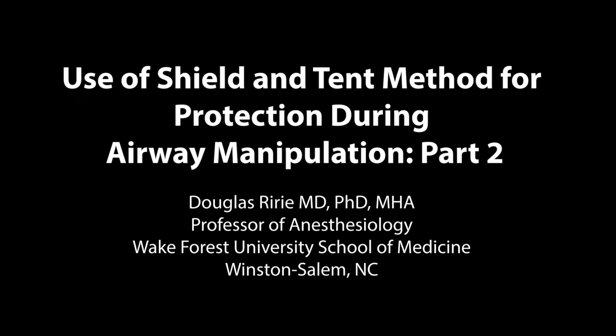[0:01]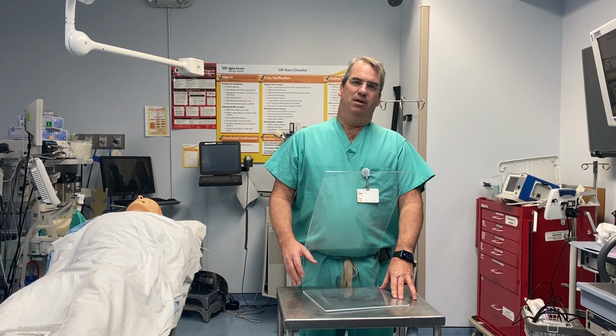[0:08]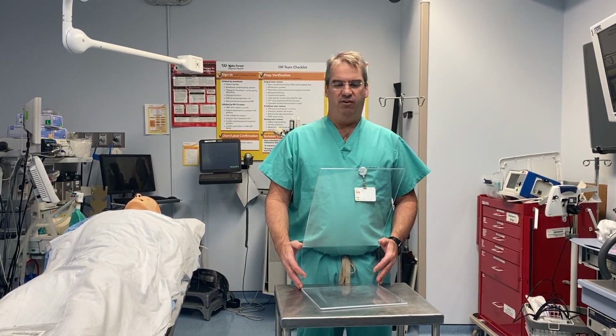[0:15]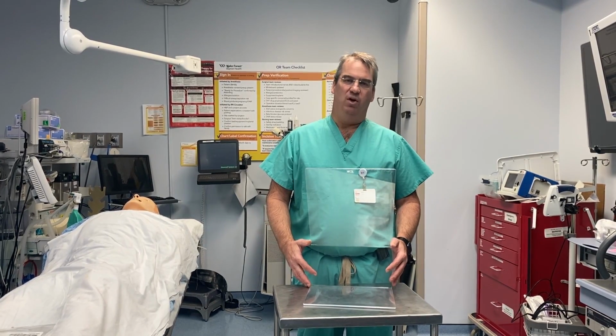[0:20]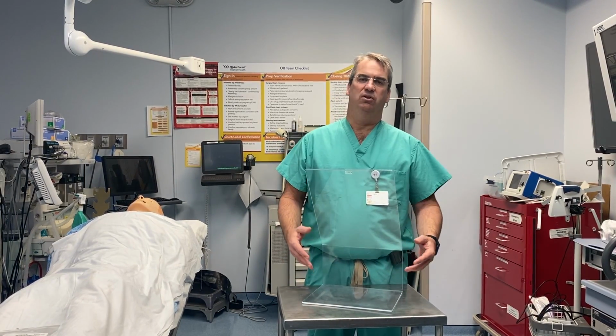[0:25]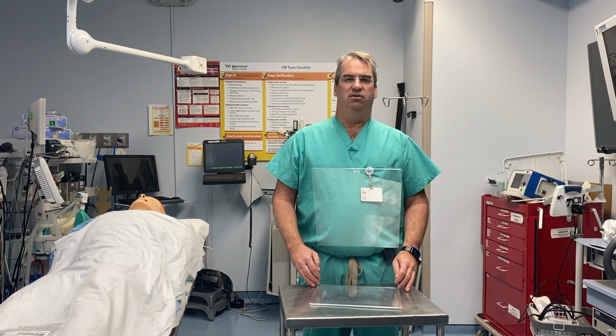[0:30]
My name is Douglas Ririe from Winston-Salem, North Carolina, and I'm here to go over some information about the intubation shield that we introduced previously. There's been a significant response for people asking questions about what the dimensions are and where to get it, and I'm here to provide that information now. Once again, the intubation shield uses a tent to try and protect providers in the face of manipulation of the airway, either during intubation or extubation.
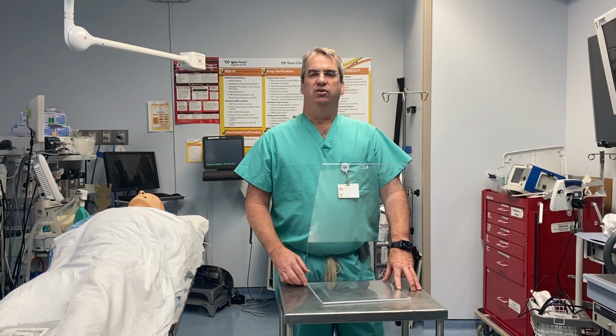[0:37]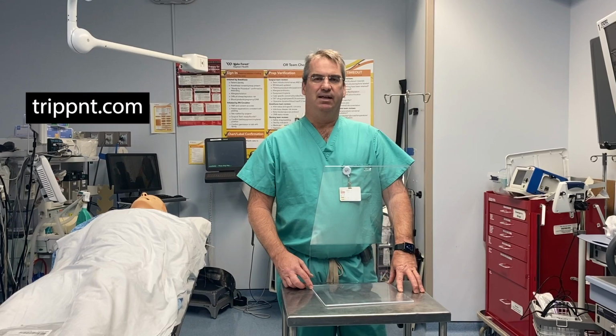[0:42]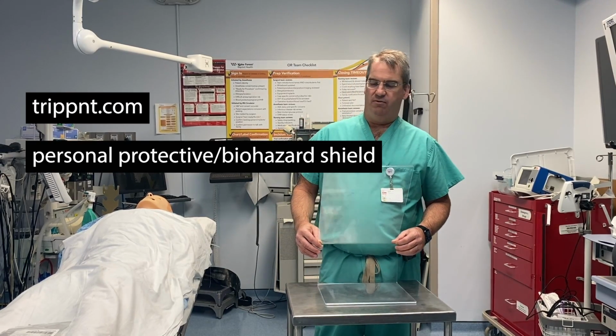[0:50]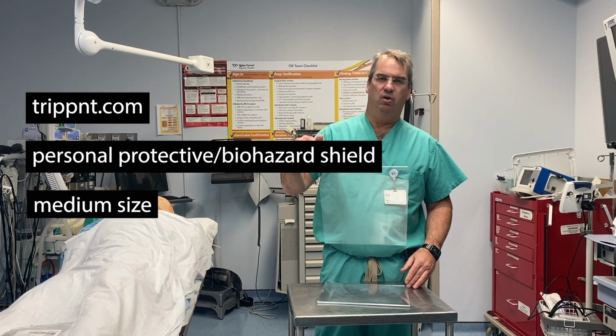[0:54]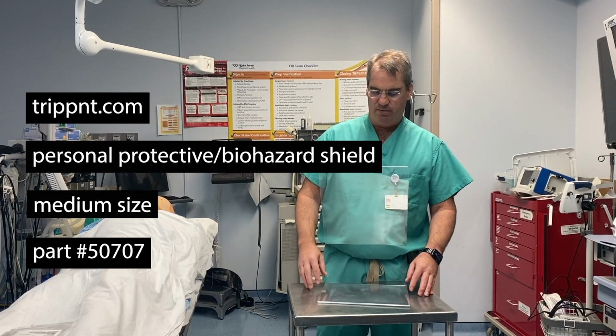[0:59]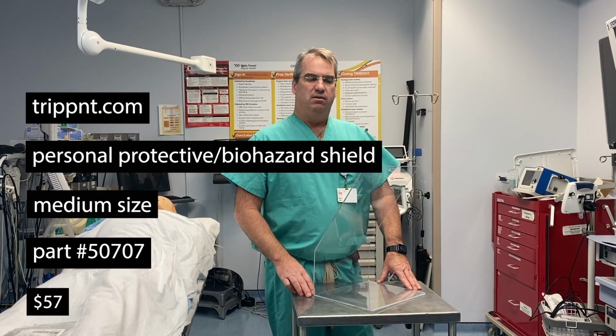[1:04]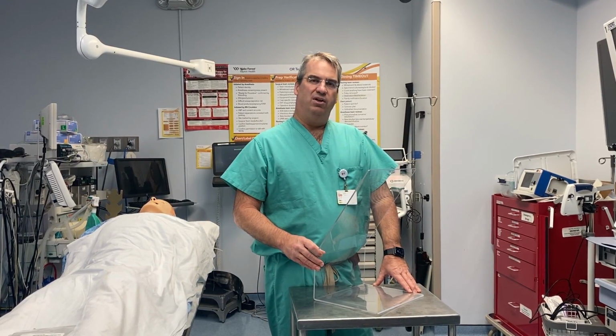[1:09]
The easiest way to get the shield is through TripNT, TRIPPNT.com. You can go to their website or you can call them. This is a personal protective shield or a biohazard shield. It's a medium-sized shield. They make one a little larger and they make one a little smaller. This is part number 50707. It costs $57 as of last time I checked. It can easily be ordered. And if you are interested in making it on your own, I can give you the dimensions.
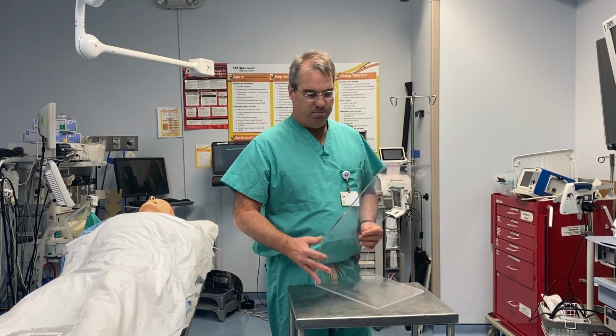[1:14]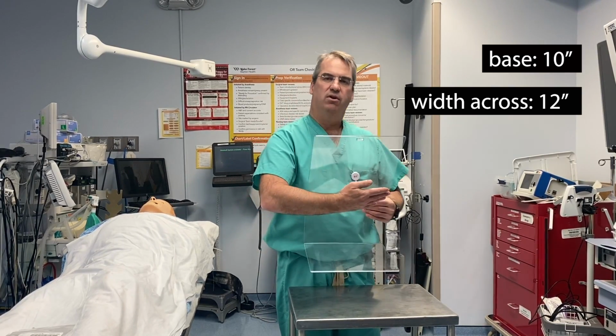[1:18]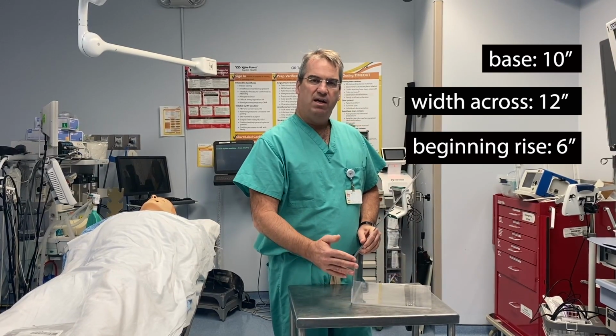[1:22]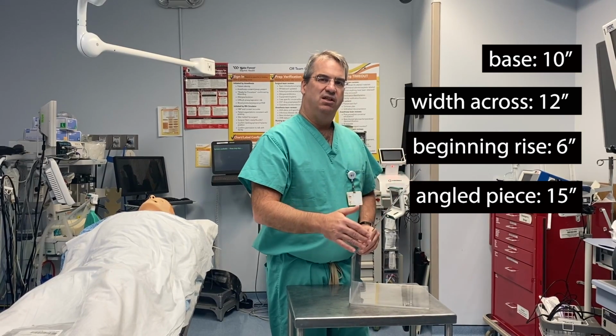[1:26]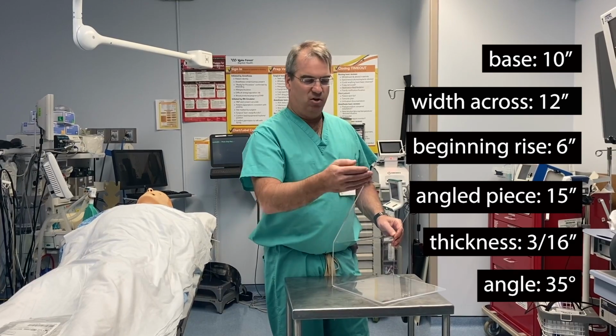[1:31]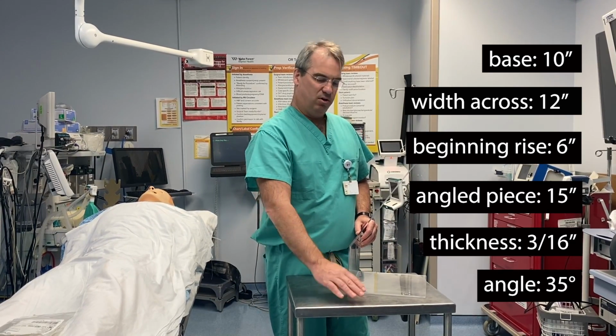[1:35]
The base is 10 inches. The width across is 12 inches. The beginning rise is 6 inches, and then the angled piece is 15 inches. These dimensions change at the different sizes, and then the angle is at a 35 degree angle to the perpendicular of the surface that you're working on.
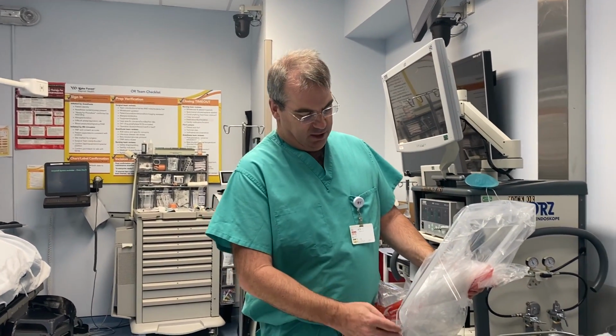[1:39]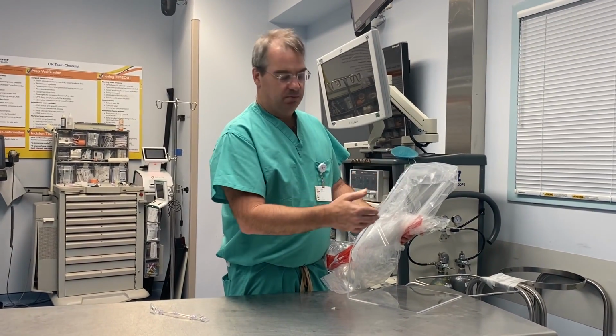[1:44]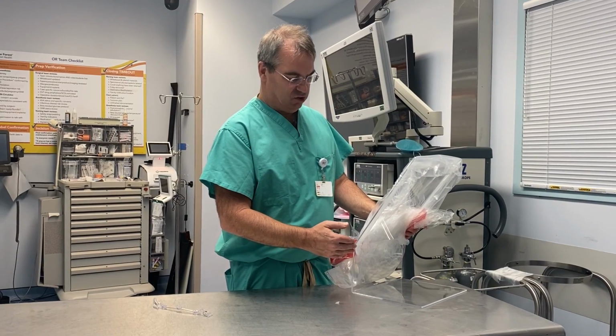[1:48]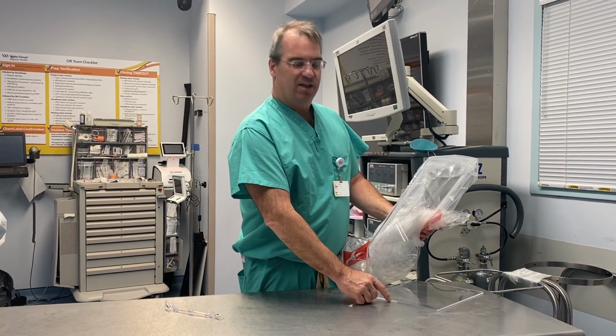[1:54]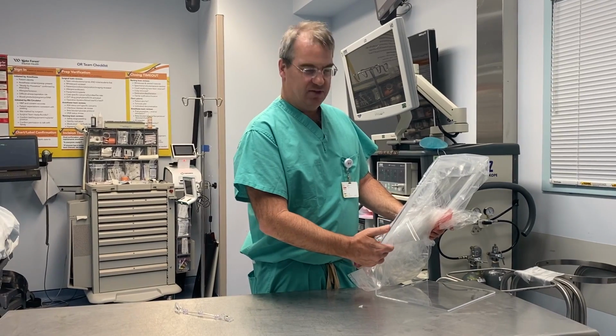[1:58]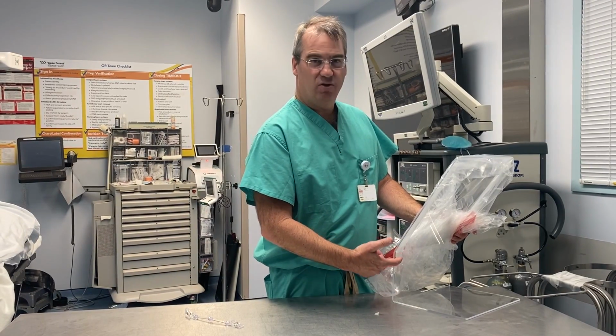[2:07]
One thing to remember, this is a continuous piece that's molded to this form. If you try and manufacture this elsewhere, you can use a little bit less angle, you can make this a little bit higher. But one might consider putting a reinforcement piece of plastic here, because if this is a seam with glue or epoxy, it's going to be more likely to crack, whereas this is one continuous piece.
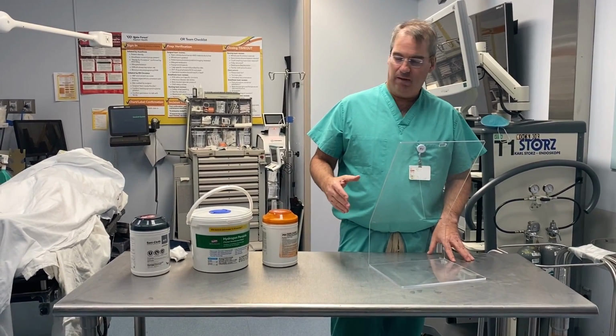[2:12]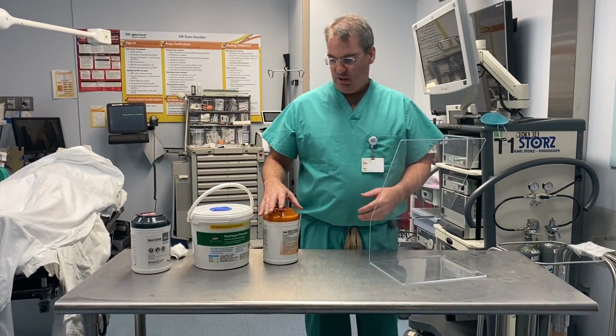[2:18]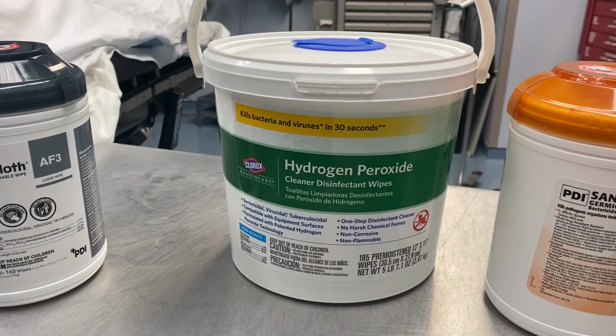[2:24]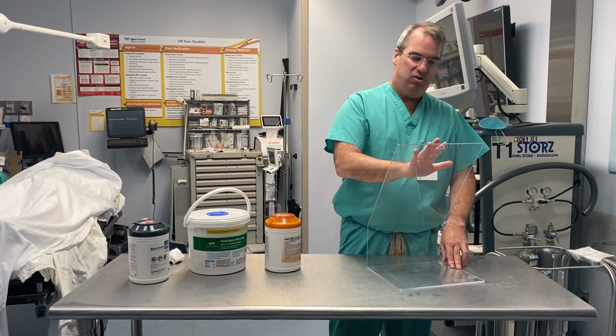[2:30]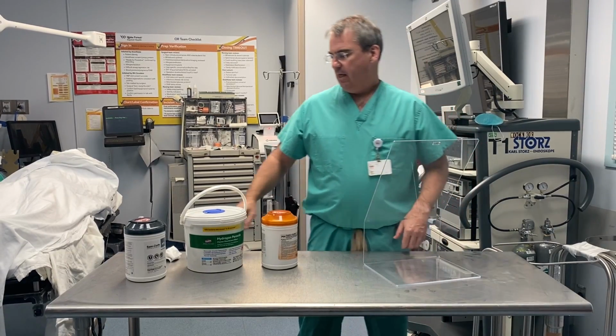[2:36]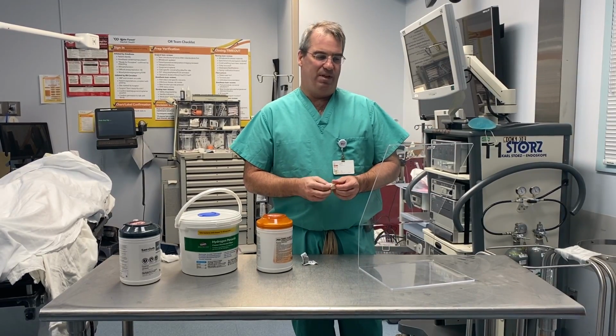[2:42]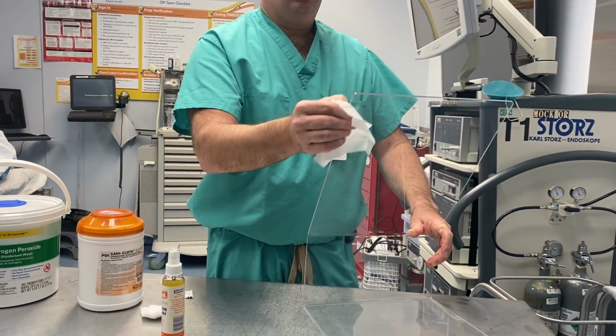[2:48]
I want to point out that any high level decontaminant wipe can be used to clean or decontaminate the shield after use. This includes the CaviWipes or the Sani-Cloths. It also includes bleach, which will not hurt the acrylic. If you wipe them down often, you'll get a slight film that will change the visual acuity through the glass slightly. And all one has to do to rejuvenate the clarity of the acrylic is to wipe it down with an alcohol wipe after the high level disinfection, and then the acrylic becomes perfectly clear again.
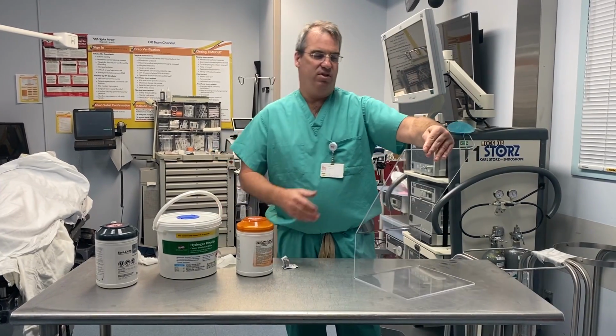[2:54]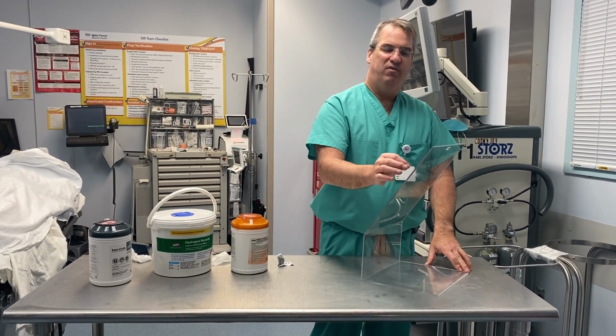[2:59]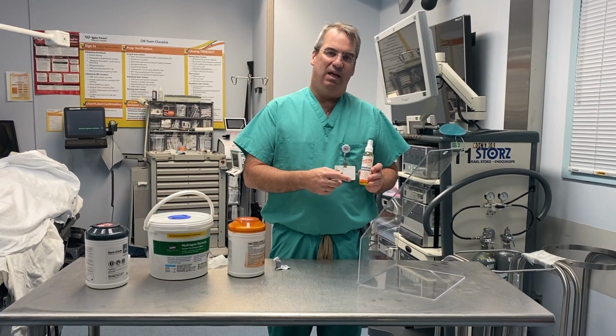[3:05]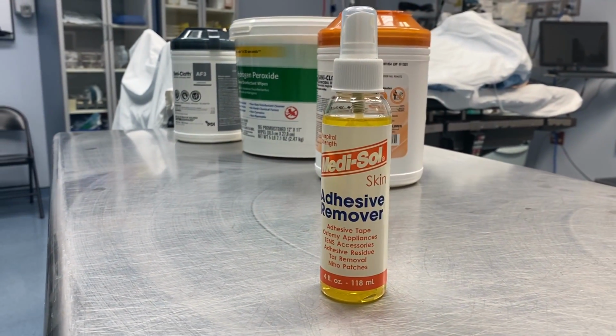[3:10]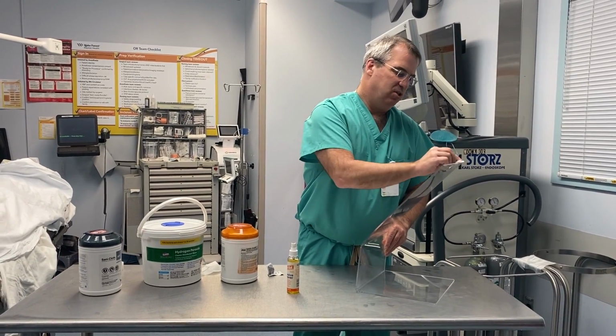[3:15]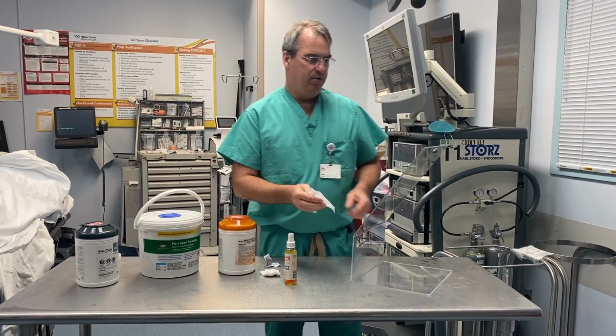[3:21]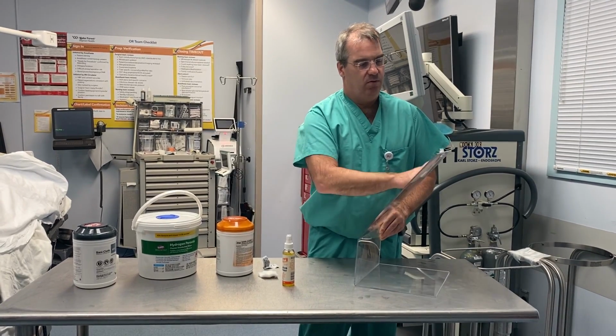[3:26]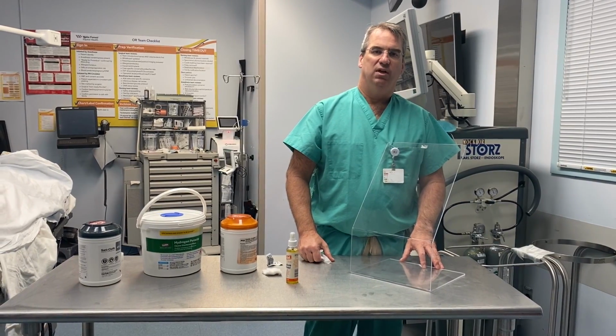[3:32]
The other thing that happens in using adhesive along the sides, over time, a small buildup of adhesive can occur. If that happens, one can use a small amount of adhesive remover, which also will not hurt the acrylic. Put it on some 2x2s, make sure all the adhesive is off so no contaminants can stick to it. And then once again, at the end of getting all the adhesive off, if you just wipe off the residue left from the adhesive remover, it becomes clear and the shield is ready for use again.
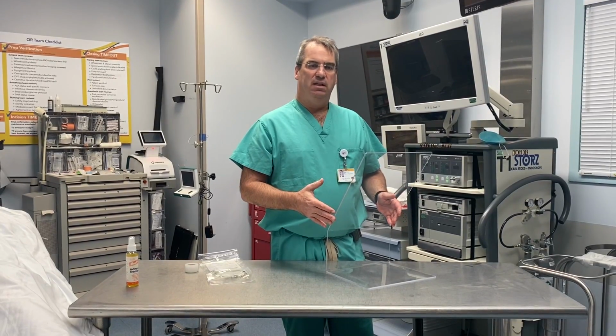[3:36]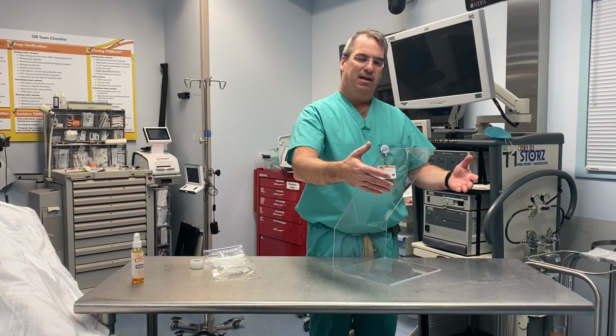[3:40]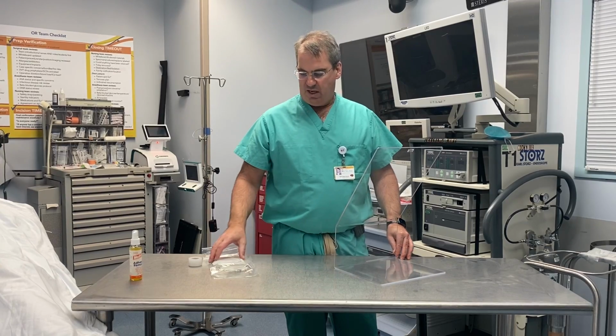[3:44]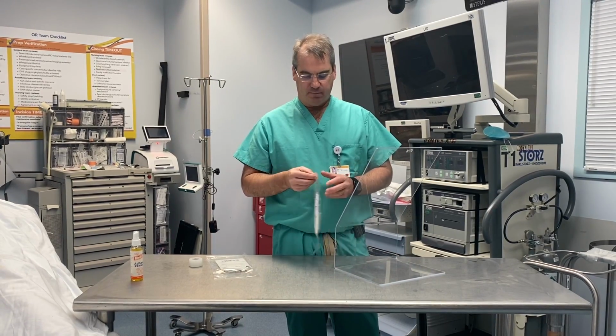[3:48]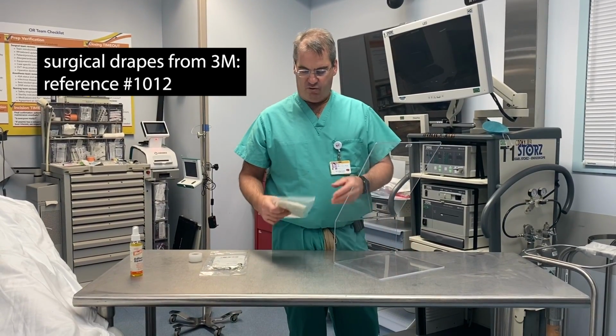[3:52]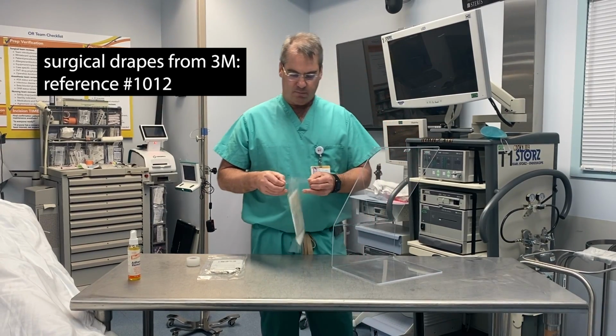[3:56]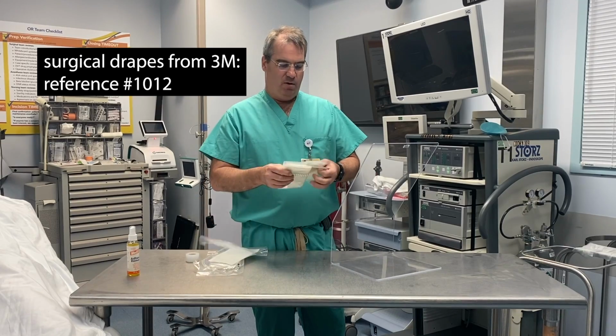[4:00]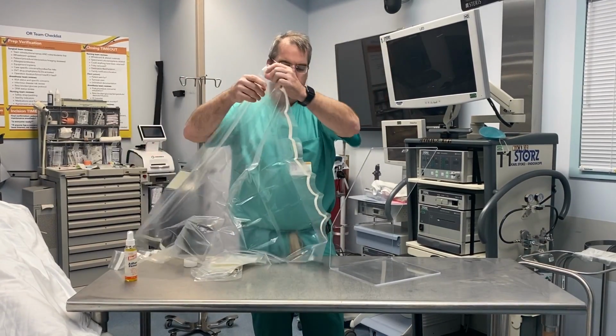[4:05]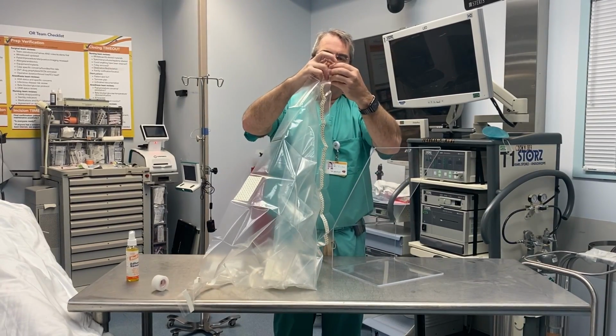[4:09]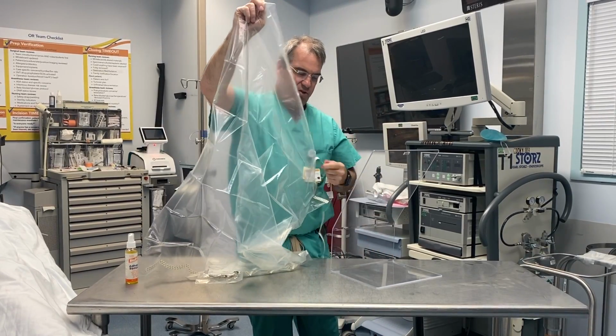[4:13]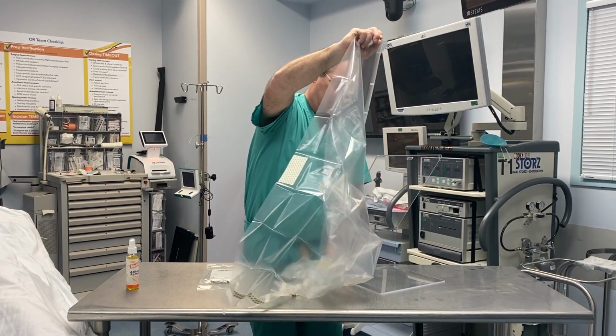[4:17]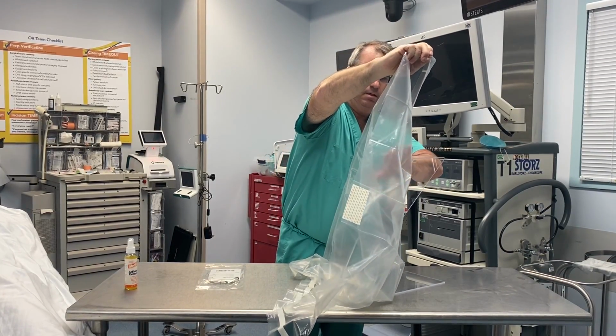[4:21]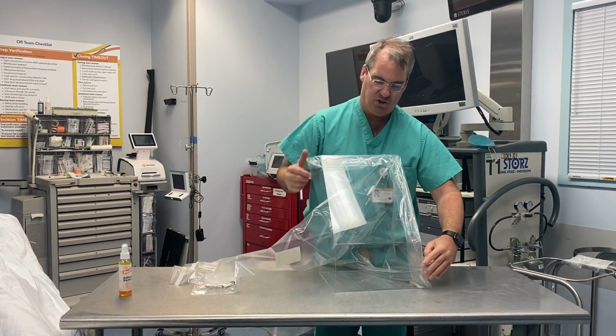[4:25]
We previously demonstrated using the shield with the bag, any kind of transparent garbage bag. We can also use standard surgical drapes for creating the tent. In this case, these are surgical drapes from 3M, which are reference number 1012. In order to create the drape, these are sticky. We would open them up and create the drape using two of the sticky drapes and putting them together, running up the shield instead of using a plastic bag. And this way we don't have to use tape. So we run it up the side. And once again, you can see that it just seals right onto the shield.
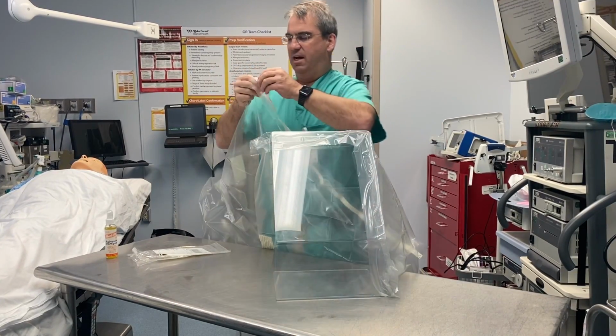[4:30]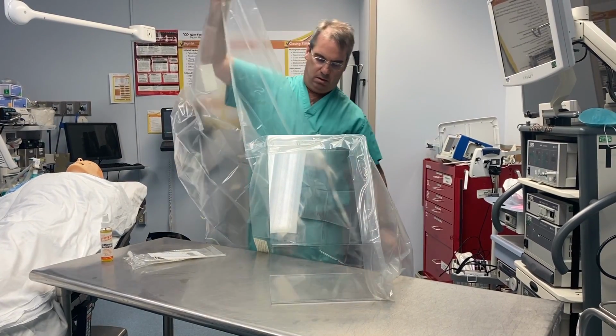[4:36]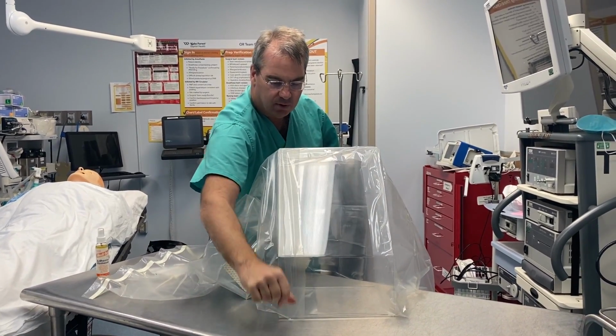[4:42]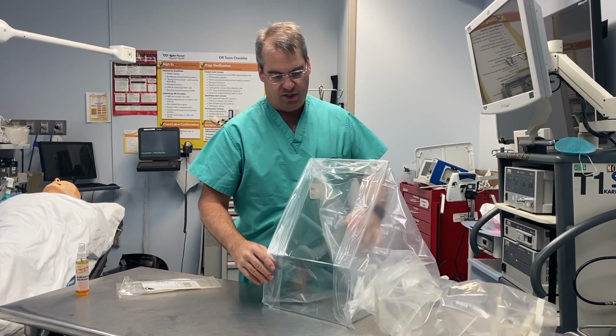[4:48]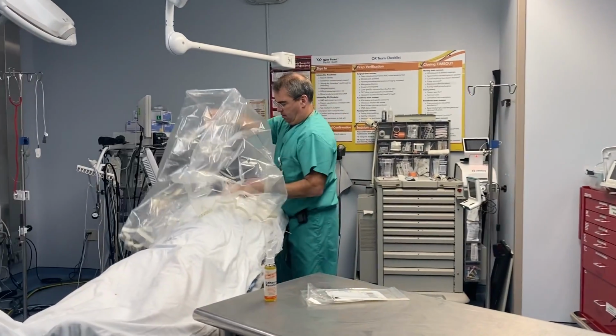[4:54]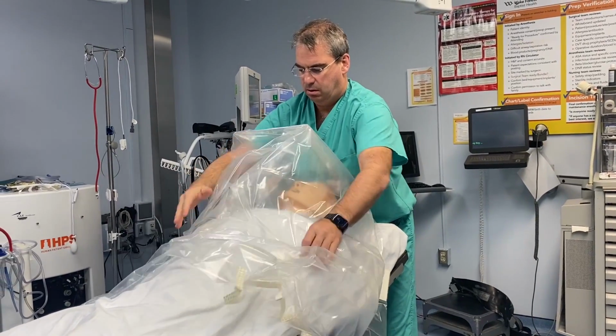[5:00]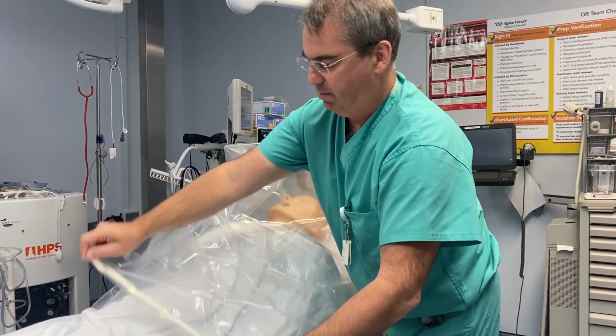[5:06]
Since this one comes up and forms the one side and then across the top, this last one is going to come down the bottom to create the last side. So you can easily see through the shield once again, and we have a tent. And instead of having a garbage bag, we now have the shield with the clear plastic drape going all the way down, and we can actually even stick the drape down to the patient, although that impedes us from getting to the patient.
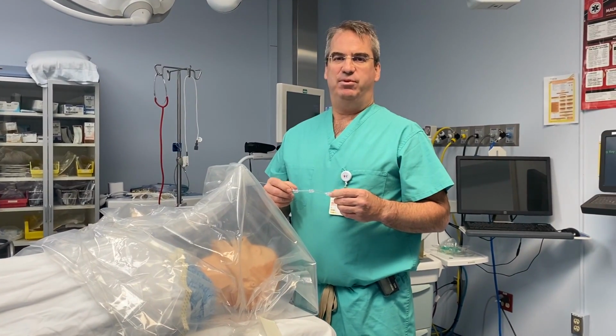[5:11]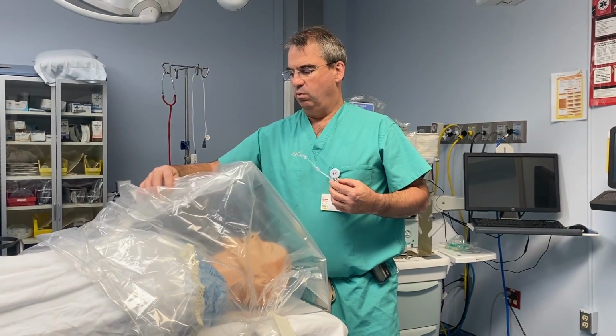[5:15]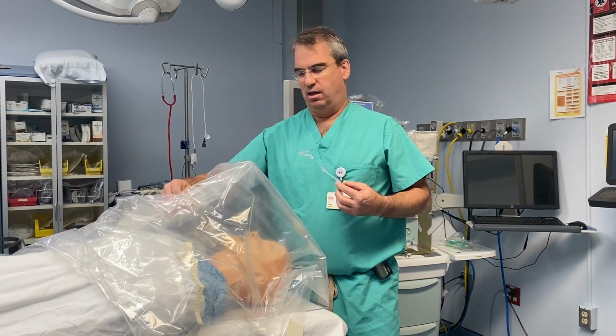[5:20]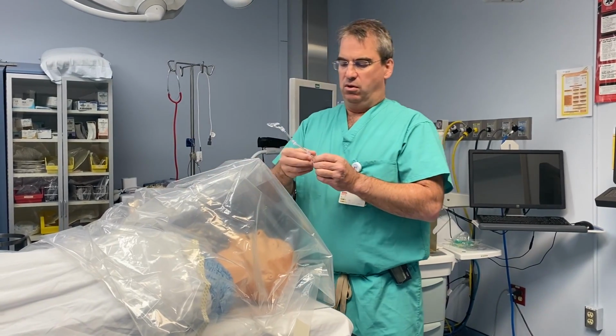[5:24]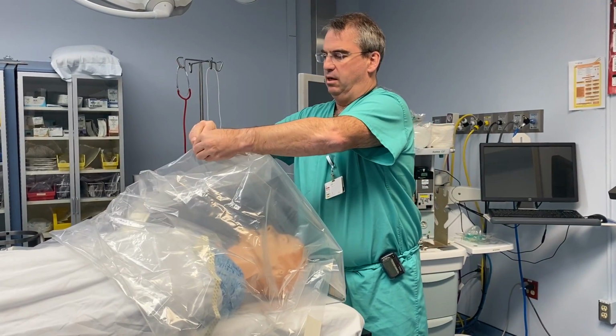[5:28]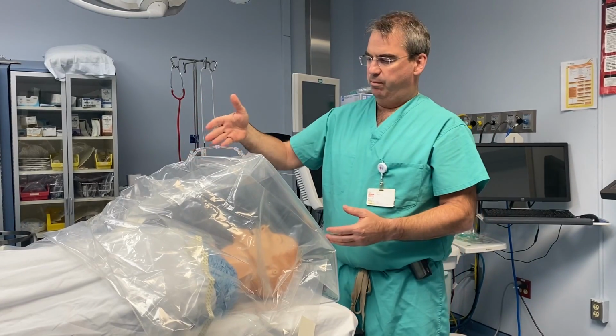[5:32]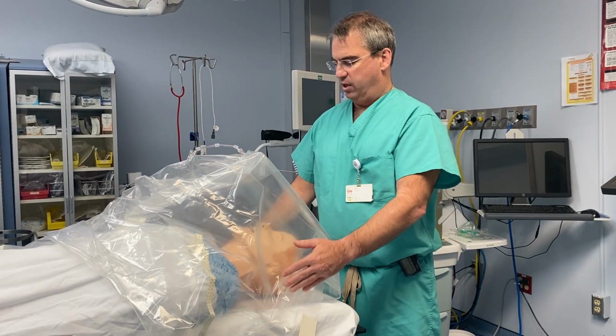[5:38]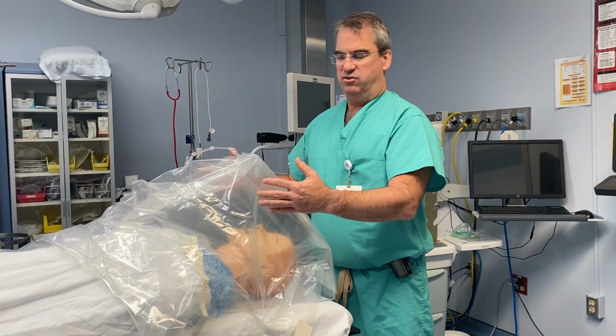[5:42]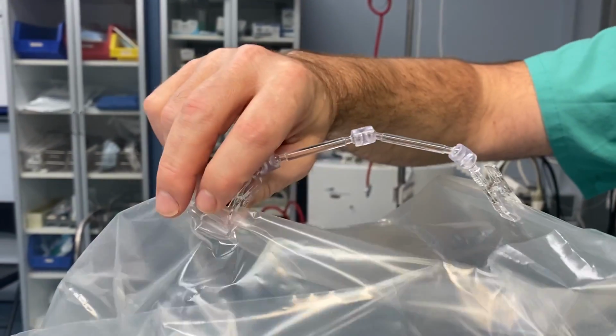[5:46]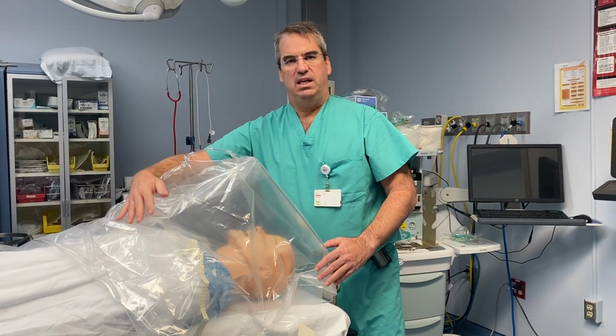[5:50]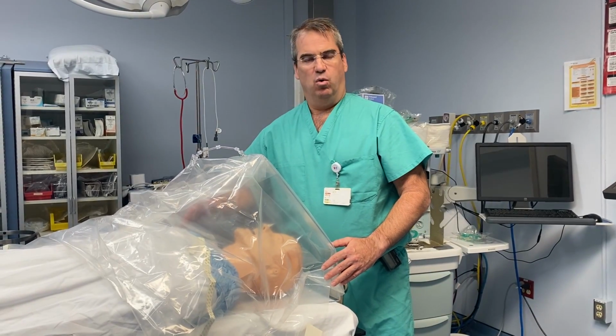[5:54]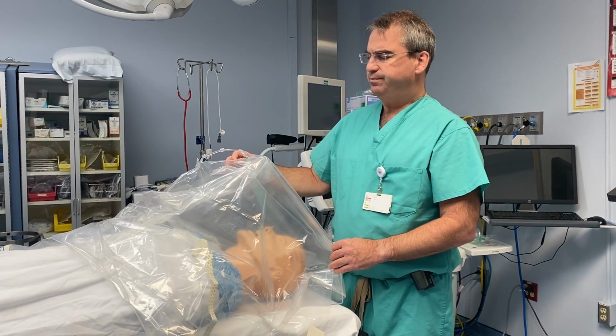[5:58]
One of the other adaptations that we've made is the tent stays pretty well up on its own, but occasionally will tend to collapse on the patient. If you have an assistant holding it, it helps. We have a little double clip here, and we can clip it here and then clip the plastic up. And what that does is hold the tent above the patient's face, particularly for extubation, and then it's not going to fall in and around them so that the patient doesn't all of a sudden have plastic around their face. At the same time, this is very flexible and malleable and can easily be moved, so it doesn't impede an assistant either grabbing something or working through the plastic and not having to go under the plastic shield.
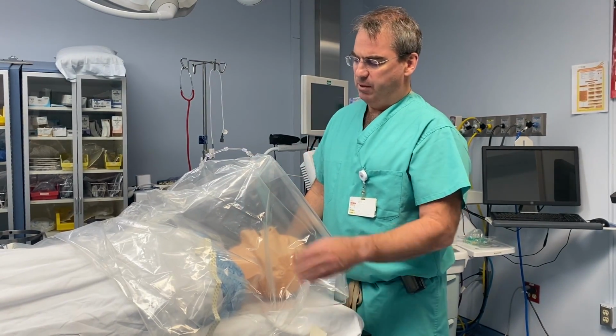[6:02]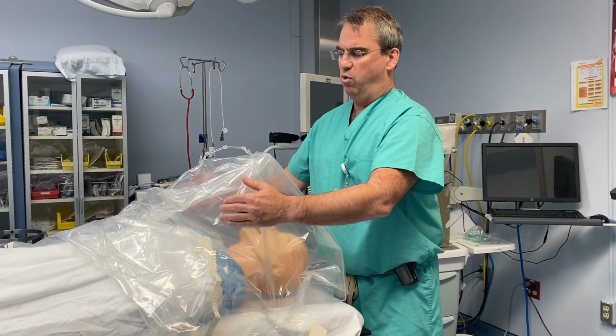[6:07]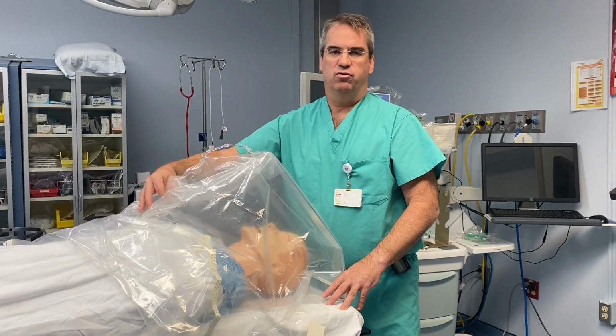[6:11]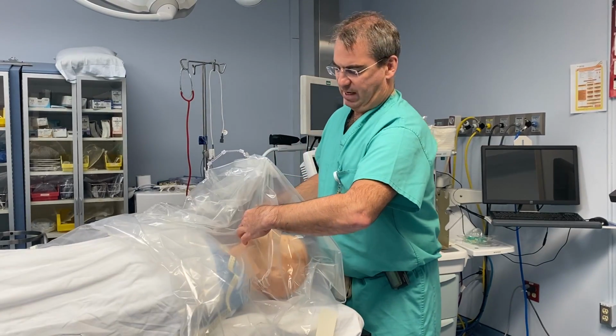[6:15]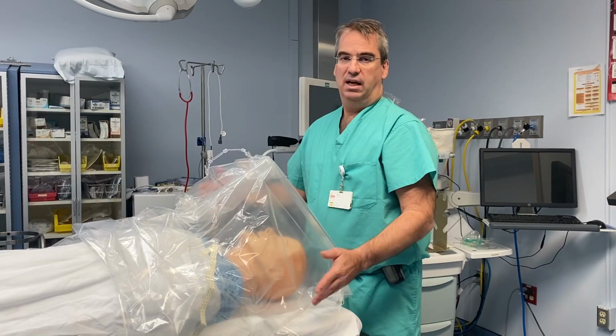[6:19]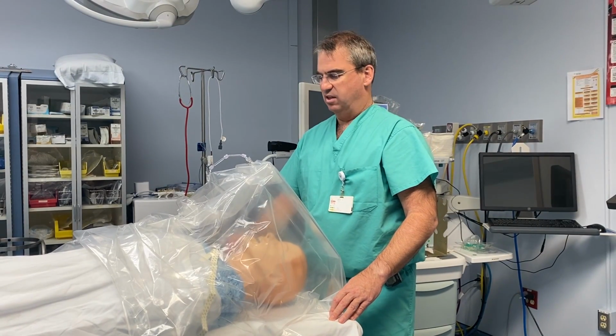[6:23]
One of the things that we've encountered from talking to other people is in trying to create more of a tent with more supports, you end up preventing the ability to work through the plastic and move the plastic around to get to the patient to do things that you might need to do, such as help them suction or reposition their oxygen or things of that nature.